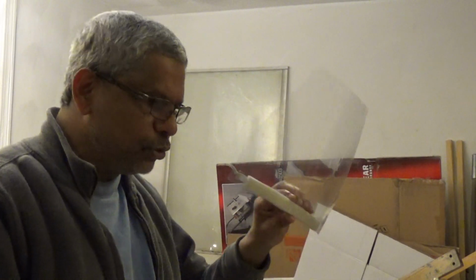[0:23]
Today I'm going to show you how to make the simplest face shield for some of our medical personnel who are working so hard on the COVID cases. These are extremely simple to make and they're very simple to put on because it's just an elastic. So you just kind of pull it forward and you can put it on your face. So let's go ahead and make one of these.
So what do you need to make some of these shields? The first thing that you need is a transparent sheet. And the ones that I'm using are binding covers, which you can buy at any stationery store. Staples has quite a few of them. You can also use transparency material that were used for the overhead projectors of a few years ago.
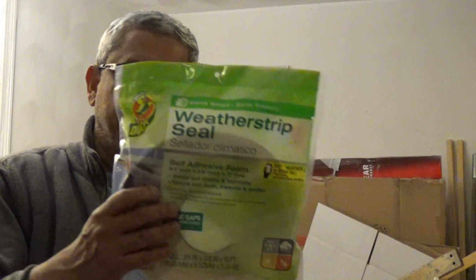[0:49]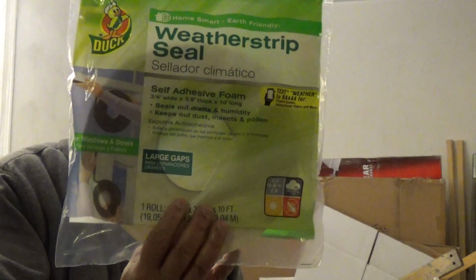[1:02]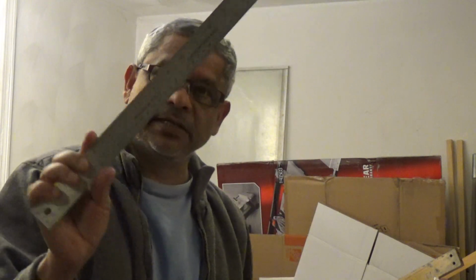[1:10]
The other thing that you would need is some weather strip sealing, and this is what I'm using over here. These are usually available for about $3.50 at a hardware store, and I'm using a 3/4 wide by 3/8 thick by 10 foot long, and you can cut it to length as you need. A set of scissors is good, a scale, a utility knife, and always keep it off when it's not in use.
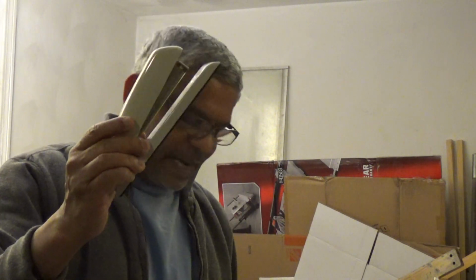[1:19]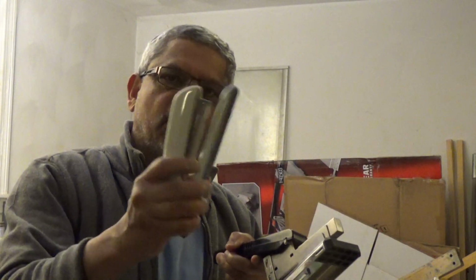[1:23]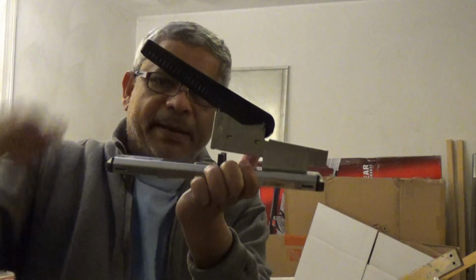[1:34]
A stapler. Now there are two kinds of staplers that I've got. This is a normal stapler that you would use. This is usable for sure, but you might need a little bit of pressure when you're going to push that staple in. This is a heavy duty stapler and gives you quite a bit of leverage to push the staple into the plastic.
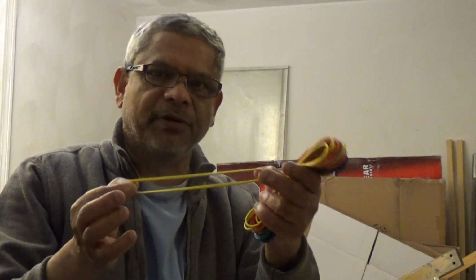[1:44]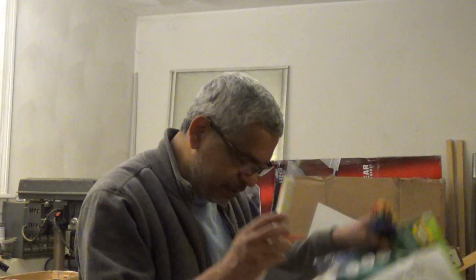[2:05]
The last thing that you need is some elastic, as I showed you in the one that I had made. I've run out of elastic, but you can use these rubber bands too. These are number 114 rubber bands, and a pack of these costs about $5 at Staples. A set of pliers if your staple has gone in the wrong way and you need to pull it out. What else? And that's about it. Okay, so let me keep these aside.
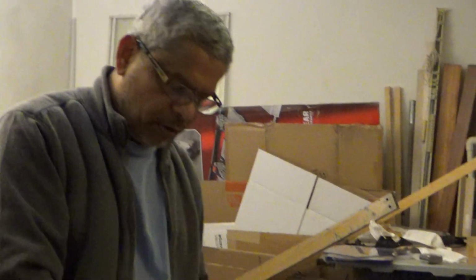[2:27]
So the first thing that you need is this rectangular piece of plastic. But if you use this rectangular piece of plastic, it's going to hit you on the shoulders. So you want to cut it in a V shape so that it fits your face better. So the way to do that, and let me turn the camera down onto the table.
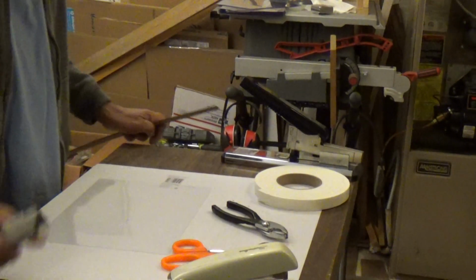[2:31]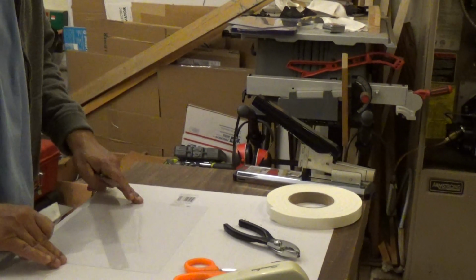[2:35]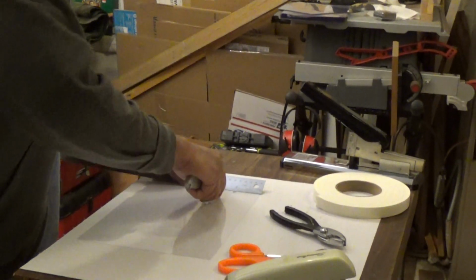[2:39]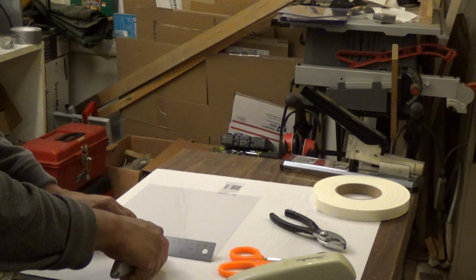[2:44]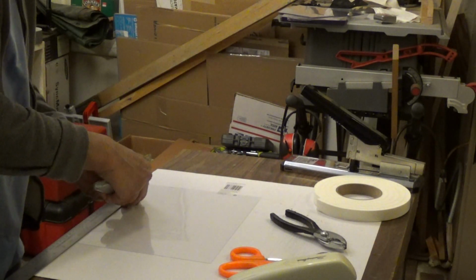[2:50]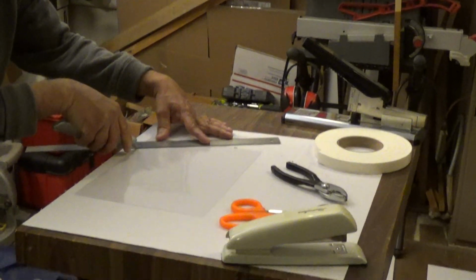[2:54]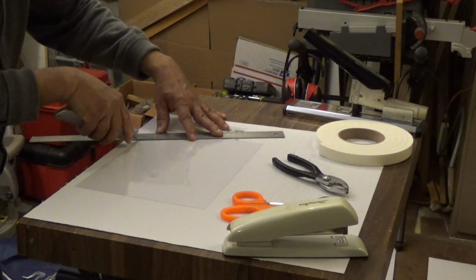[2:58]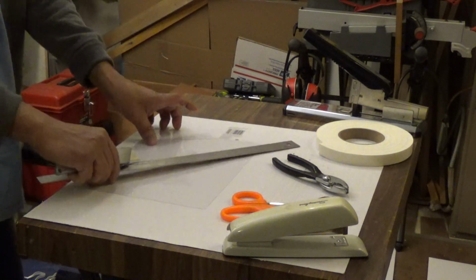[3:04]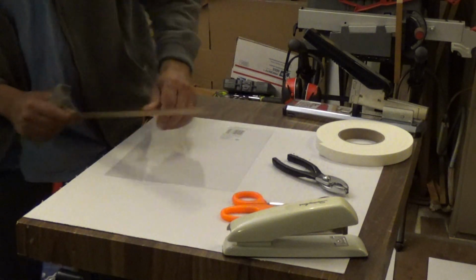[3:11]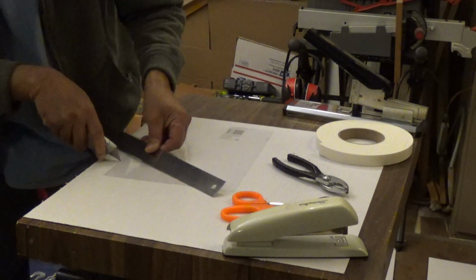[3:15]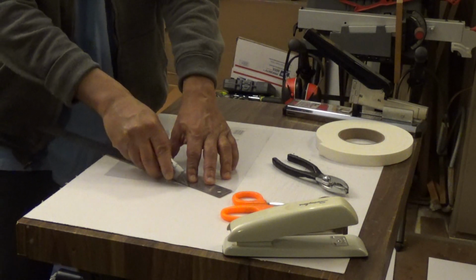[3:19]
From the top of the sheet, measure about 3 inches and make a mark there, and 3 inches on the other side, make a mark there. From the bottom, about 2.5 inches, and then cut it from where you had made the mark on the top piece. Okay, so that piece goes into the recycling, and the same thing on the other side. 2.5 inches to the mark of 3 inches that you had made before.
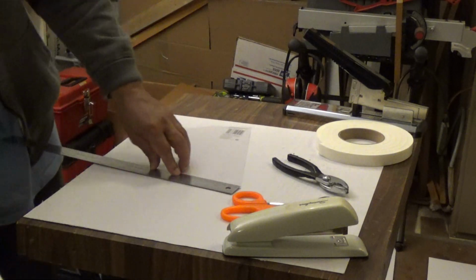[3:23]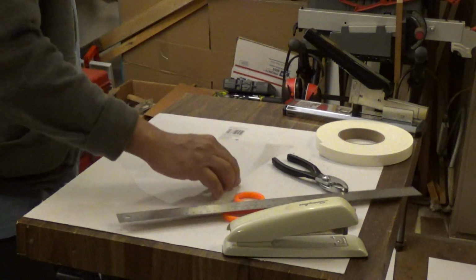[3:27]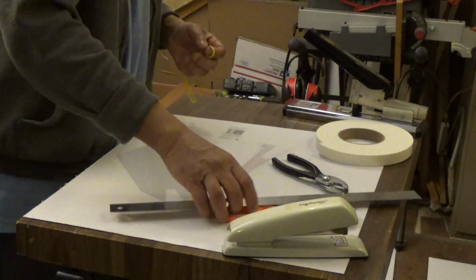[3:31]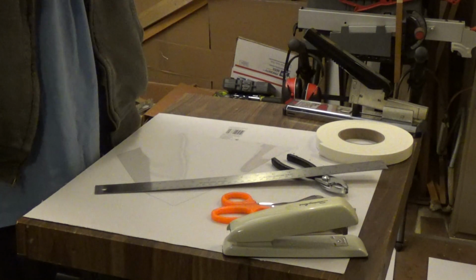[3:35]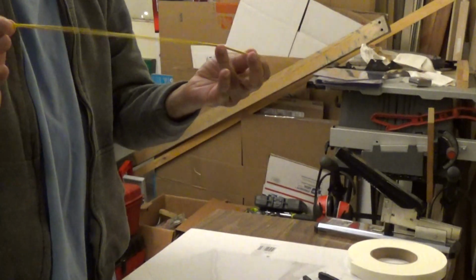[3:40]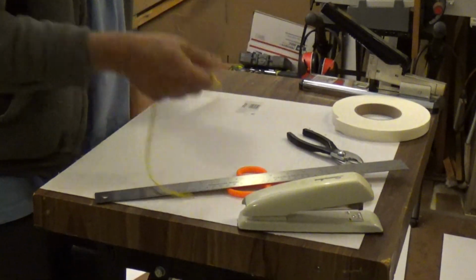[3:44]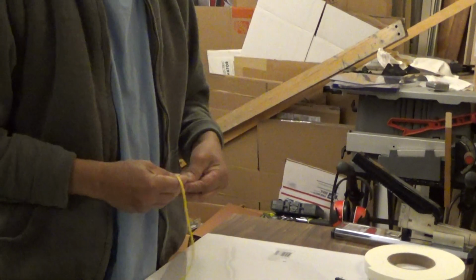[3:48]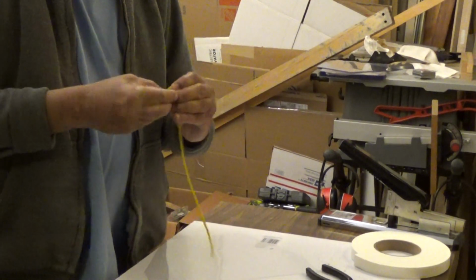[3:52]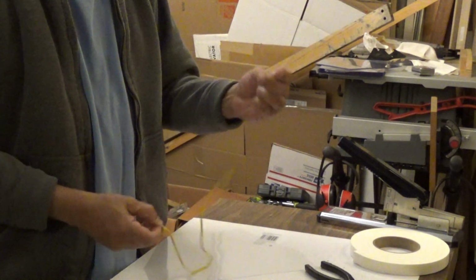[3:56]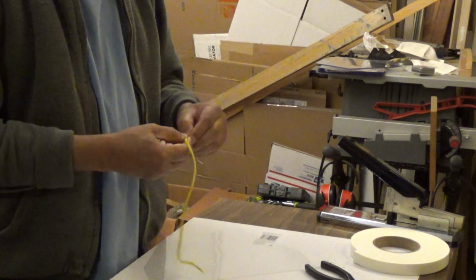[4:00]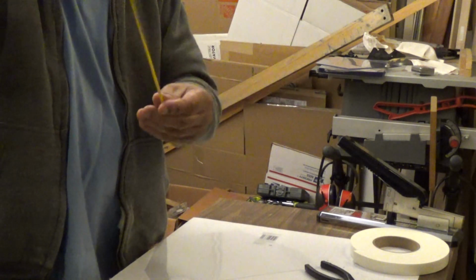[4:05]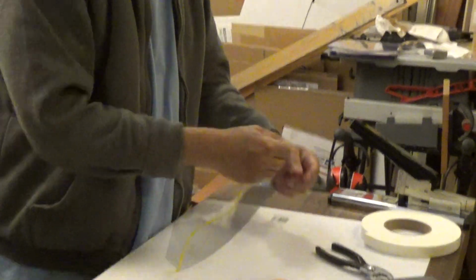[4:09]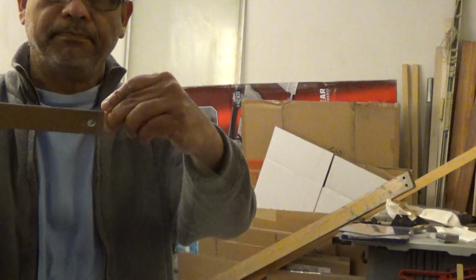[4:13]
Okay, now you take your rubber band, cut it into one strip which is about 14 inches long at the 114 rubber band size, and you tie a knot at both ends. Okay, so now you've got a knot at both of the ends of the rubber band. You put it on your sheet about 1 inch from the top. The reason for that is when you put the rubber band on your head, it needs to pull the sheet towards you. And the foam is going to help keep it in place.
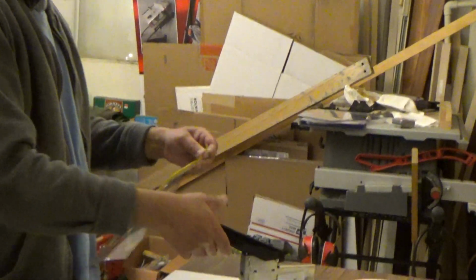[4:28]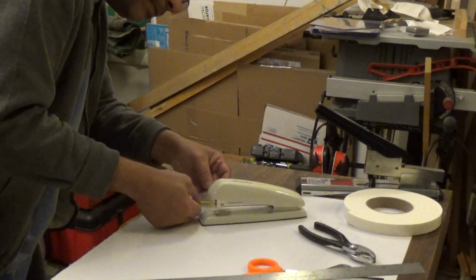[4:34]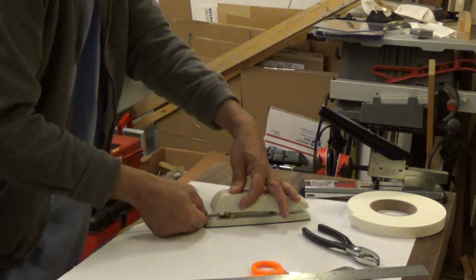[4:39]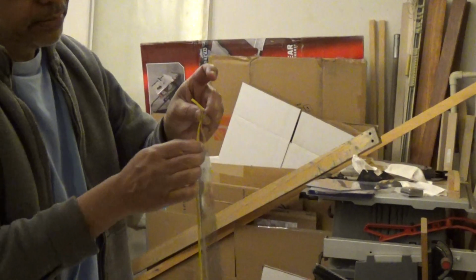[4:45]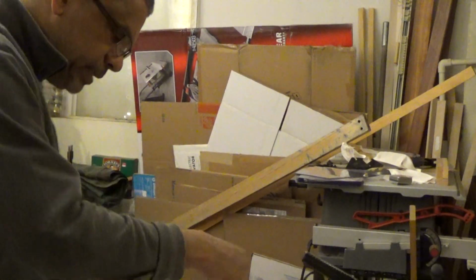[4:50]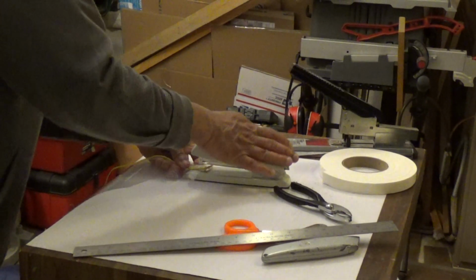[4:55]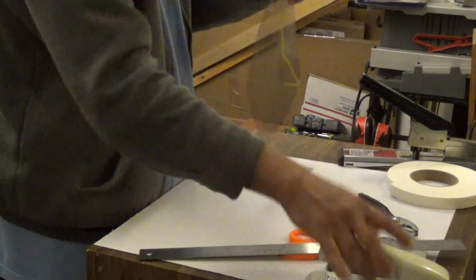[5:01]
So about 1 inch from the top, take your stapler. Well, let me use the other one because more people will probably have the regular one. And just about a 1/2 inch into the sheet, just attach it that way. Okay, on the other side you do the same thing. Hold it there under the stapler about a 1/2 inch, and you've got your basic shield done.
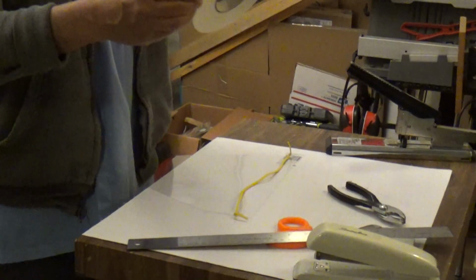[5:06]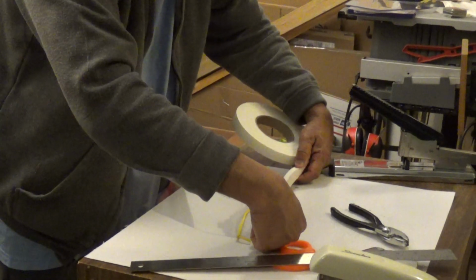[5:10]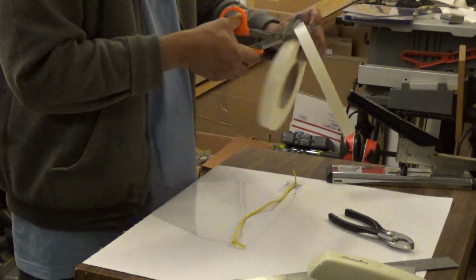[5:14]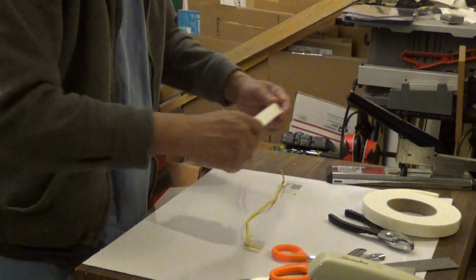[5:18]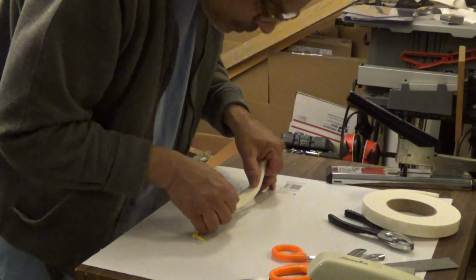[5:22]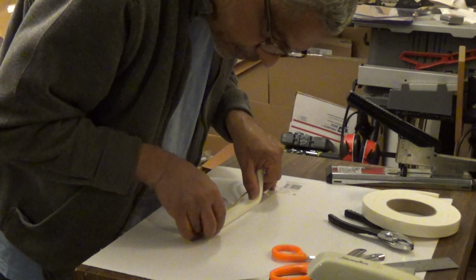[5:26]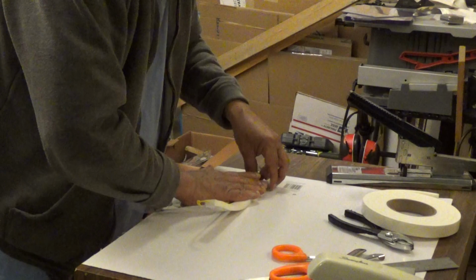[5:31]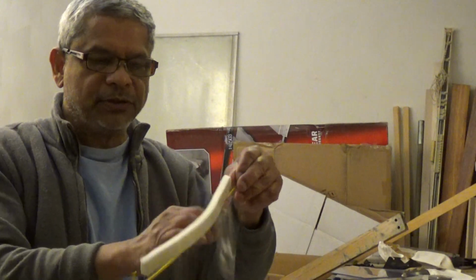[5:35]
The last thing is to take the foam tape, measure it out between those staples, cut it to length, and align it to the top of that shield. And then just stick it in place. That's it. You have one shield ready.
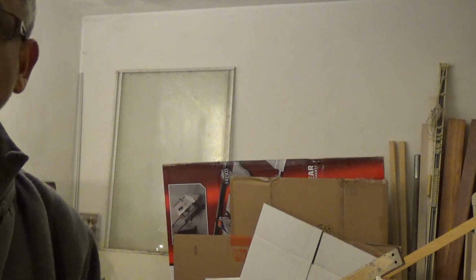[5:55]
Okay. Thank you guys. I'm sure that you'll be able to make a lot of these. It typically takes only about a half minute to make one of them. So I've got some 25 ready for delivery to a hospital this afternoon.